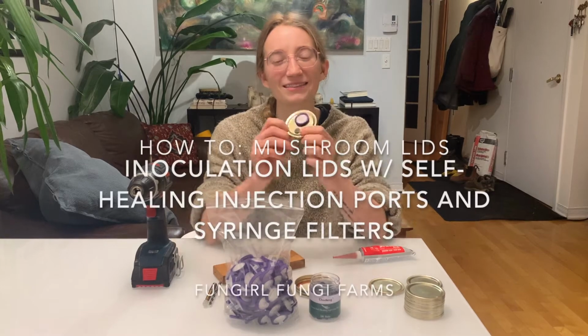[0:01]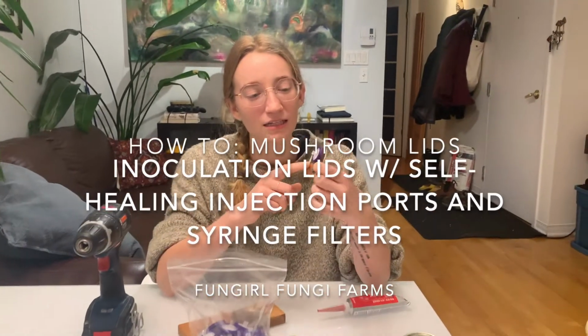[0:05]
Hi everyone, tonight we're making inoculation lids for mushroom wort. We're going to need a syringe filter for free air exchange, the flow of clean oxygen to the mycelium, and a self-healing injection port where you can put your spore syringe or the liquid culture syringe with very little risk of contamination. So we'll show you how to make those.
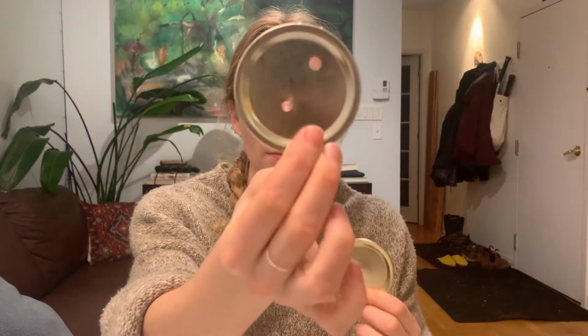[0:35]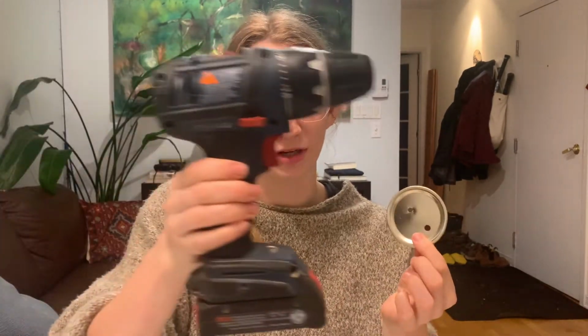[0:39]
So what you'll need are these mason jar, canning jar lids. You'll take the lid and make two holes, one a little bit bigger, one a little bit smaller. You'll need a drill to make both of these holes. The bigger one is made with a 1/4 inch Forstner bit. This makes the hole for the self-healing injector port.
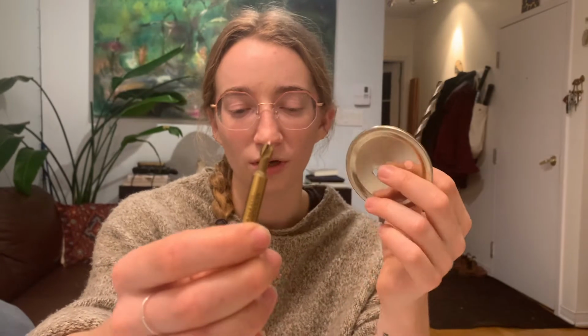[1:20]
These are 13 millimeters and come in a pack of 100 for $13, so that comes out to about 13 cents each. And these fit in there really well, I'll show you later. But you don't need to cement them in with any silicone or anything. The smaller hole is made with a 13/64 metal drill bit. You can also use a brad point bit that has a little pointy thing like that. That's usually for wood, but since it's such thin, flimsy metal, it's okay, and it makes it a little bit easier.
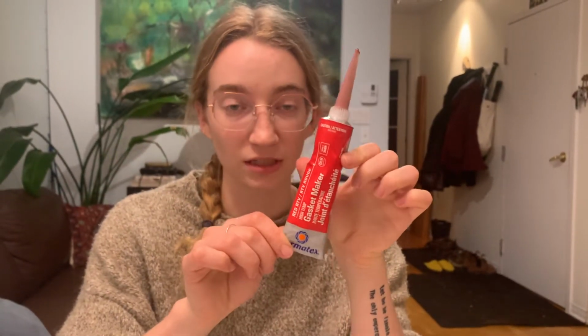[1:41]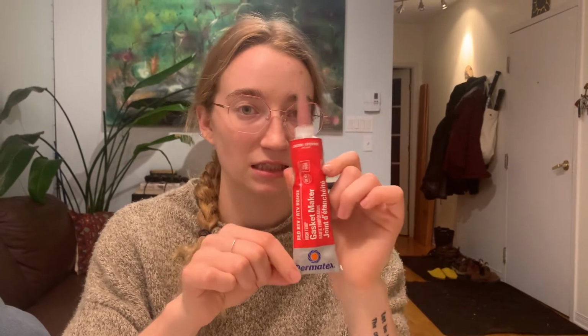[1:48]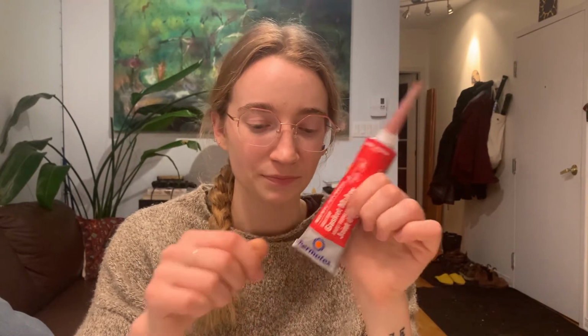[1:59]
So the syringe filter goes in the smaller hole. This is 25 millimeters in diameter with a 0.22 pore size. And you cement this into the smaller hole with high temperature silicone. Make sure it's high temperature because it's going into the pressure cooker at very high temperatures. A lot of people use this RTV gasket maker, but just make sure it's high temperature. This is $8 for the whole thing and can make probably 1,000 lids, so it's about 1 cent each.
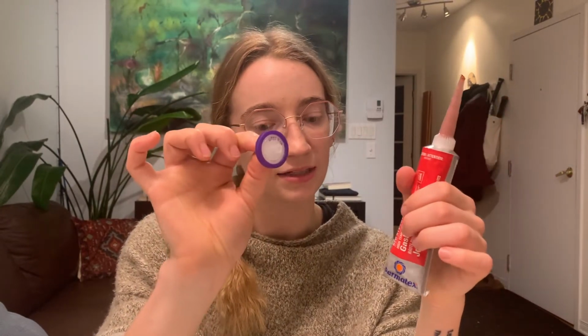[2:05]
These are 100 for $24, so about 24 cents each. So the whole price of everything, including the lids, which come in a pack of 12 for $5, is about 85 cents a lid. You'll also need a piece of wood to drill into to make sure you don't damage your table. And we'll put a link in the description with all of these items so you can buy them if you want to make your own lids.
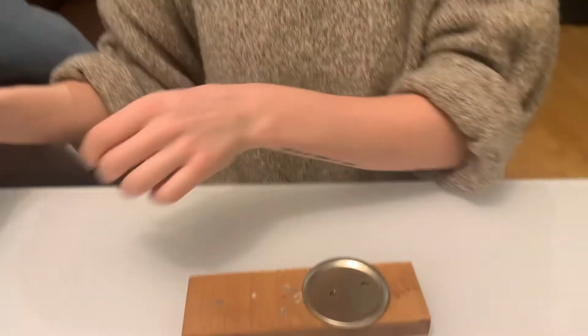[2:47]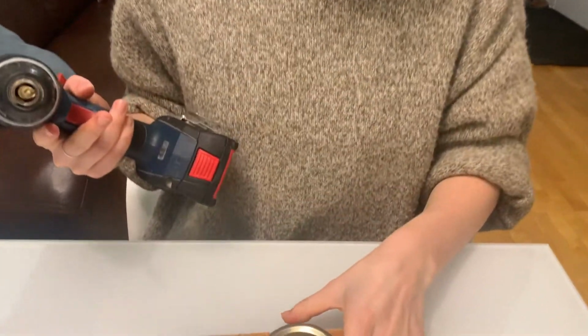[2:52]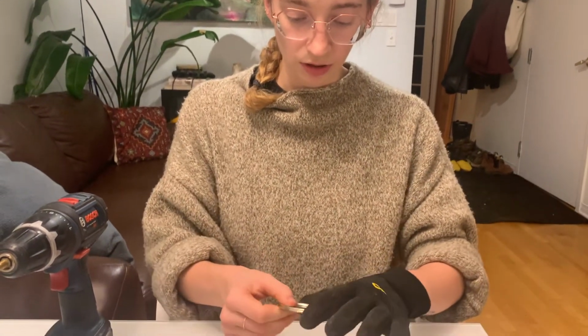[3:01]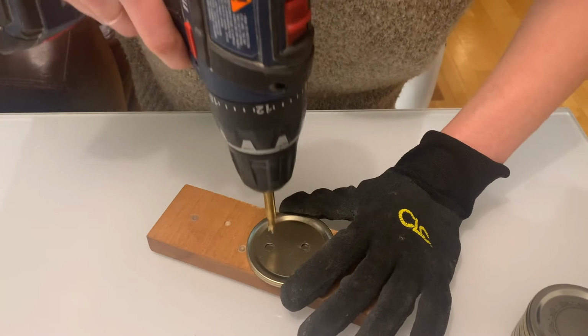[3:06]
So now to make them, just to make sure that they have a nice spacing and don't crowd each other and also are not too close to the sides, we have a prototype that we just used to make all of the new ones. So we put this over and then put them both on the wood. I'll start with the 1/4 inch. You can use fishing gloves that have a bit of a grip just to hold it to make sure it doesn't go anywhere. And you want to make sure they line up nicely. And then it's easier if you stand up and sort of have your strength pushing over, but you want to make sure you're in the middle.
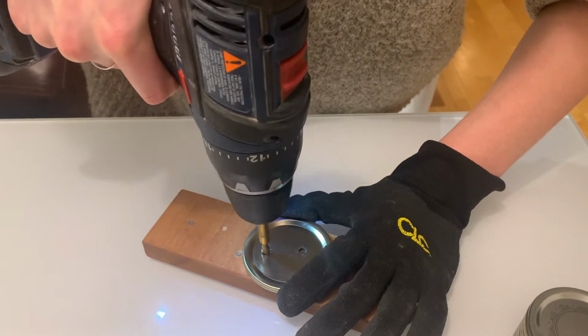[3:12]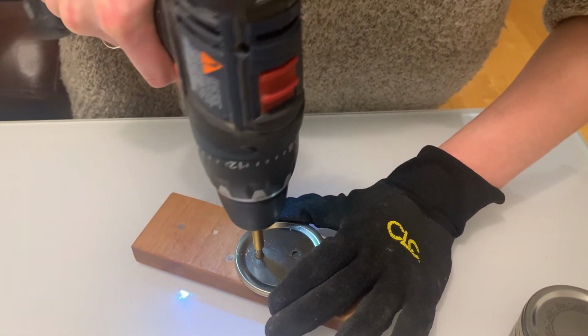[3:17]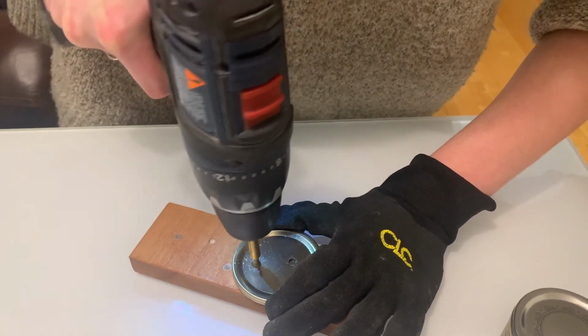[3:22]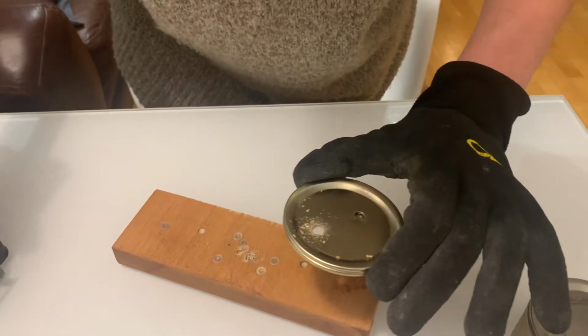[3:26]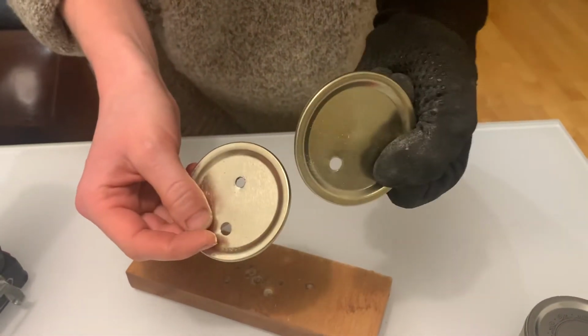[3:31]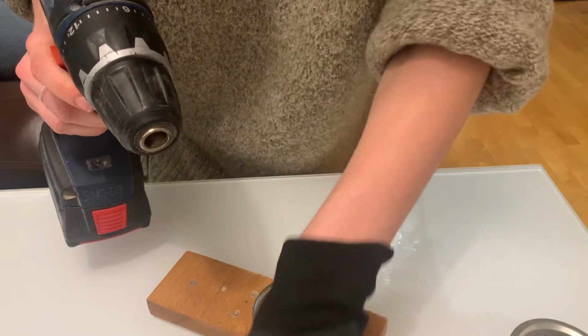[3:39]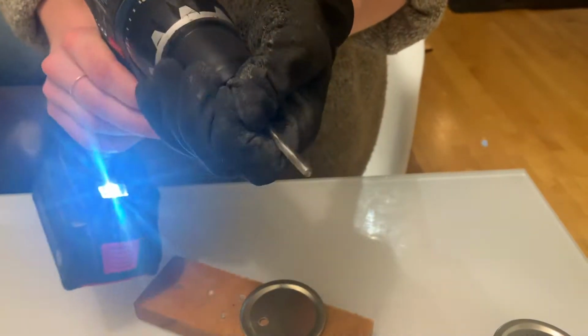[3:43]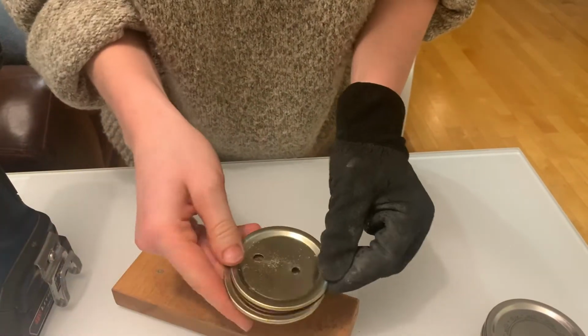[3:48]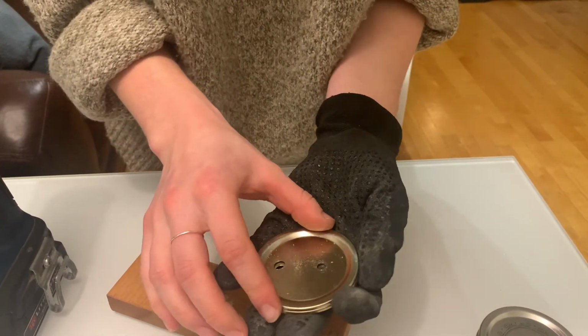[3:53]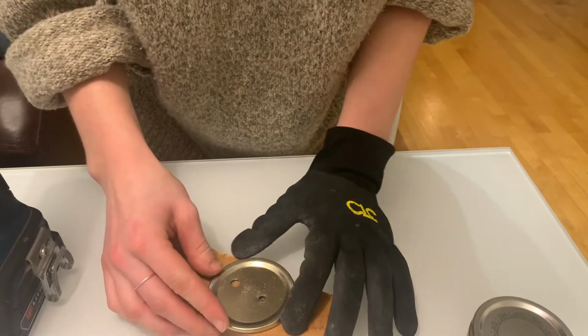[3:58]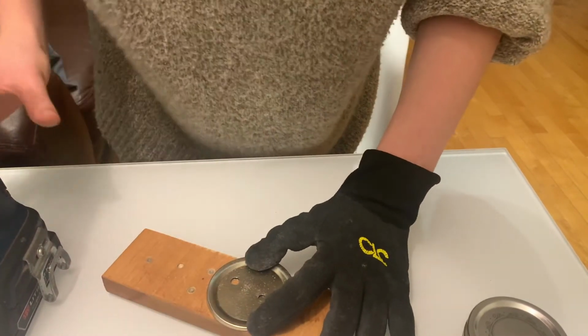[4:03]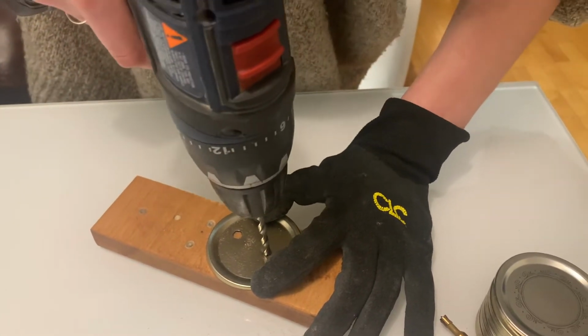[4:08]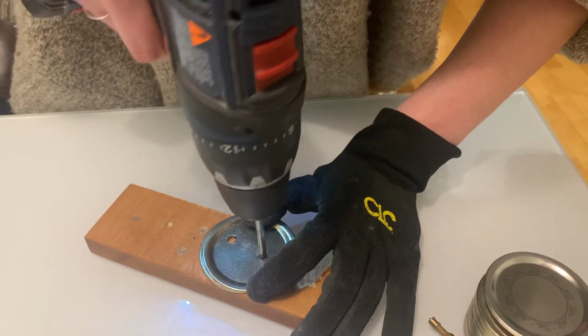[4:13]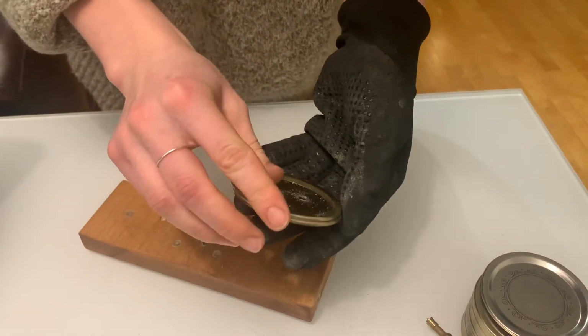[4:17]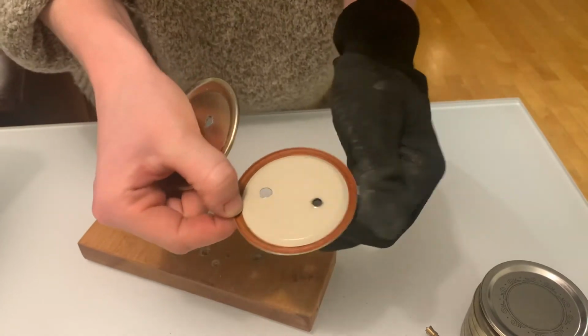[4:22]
A bit too long, but that makes the hole. So you're going to make sure to line them up. Change out the drill bit, put the right one on top. Line it up nicely. Again, standing up so you can put all of your strength down makes it easier. Yep, not too bad, not too long.
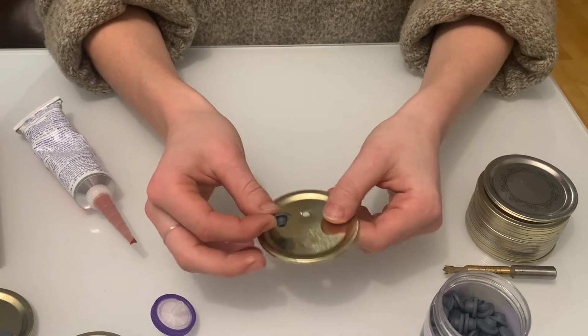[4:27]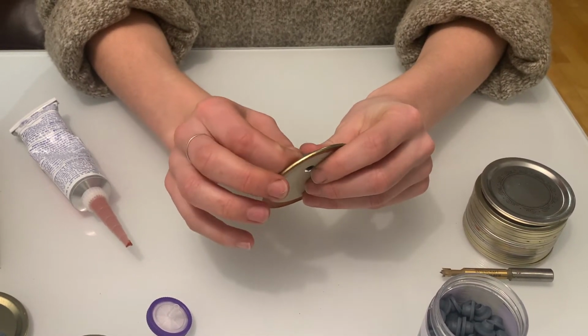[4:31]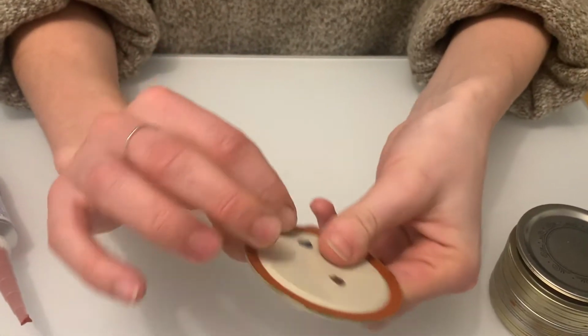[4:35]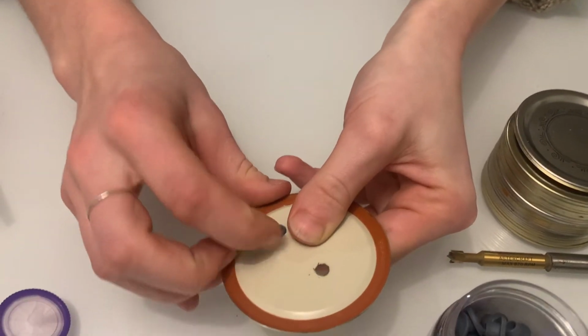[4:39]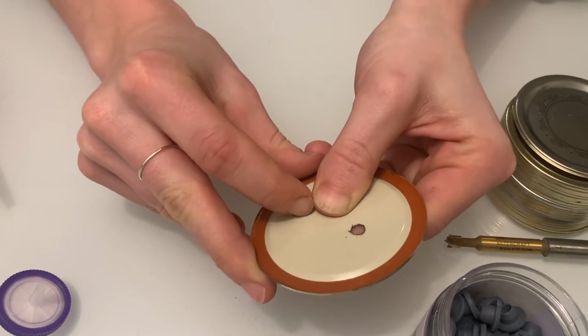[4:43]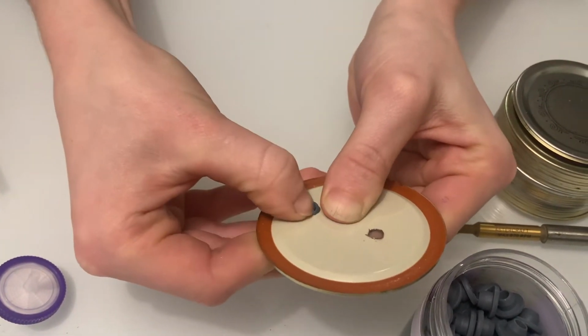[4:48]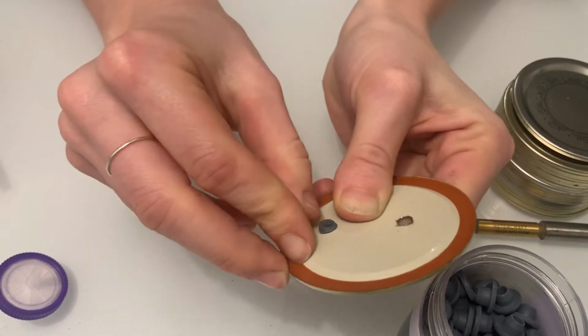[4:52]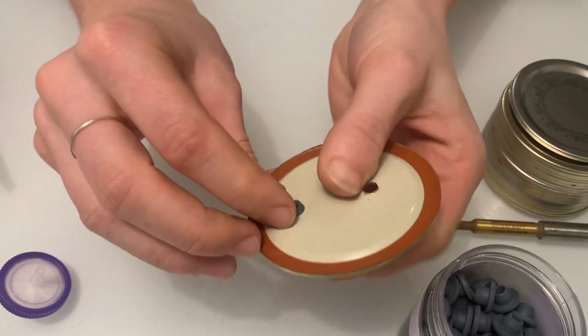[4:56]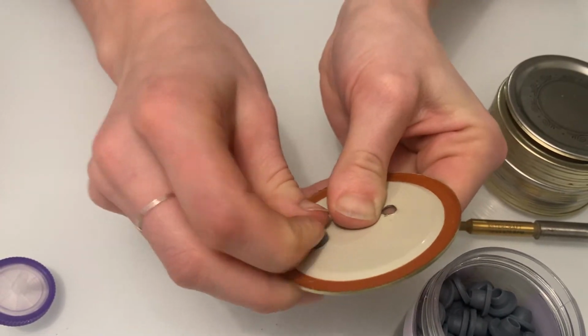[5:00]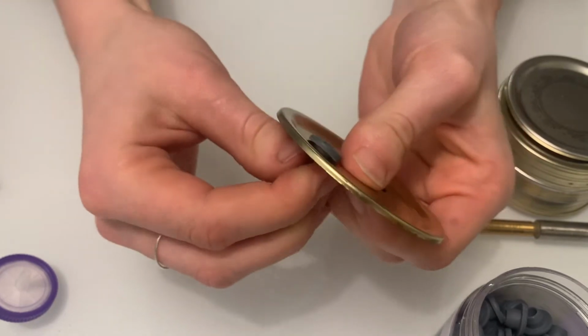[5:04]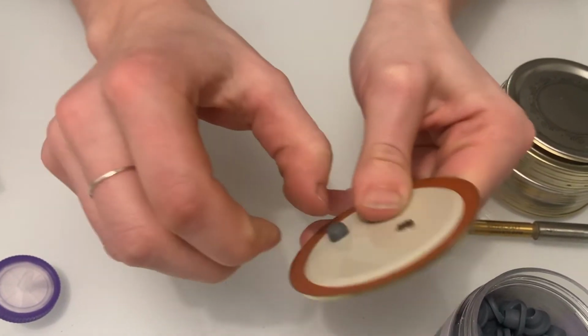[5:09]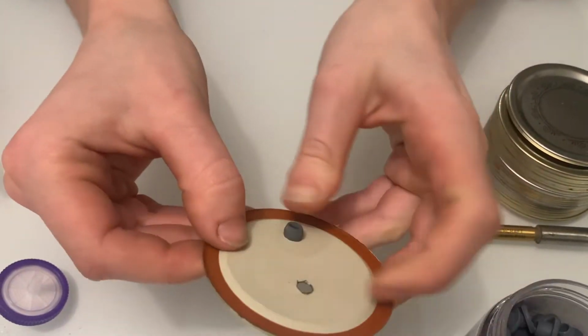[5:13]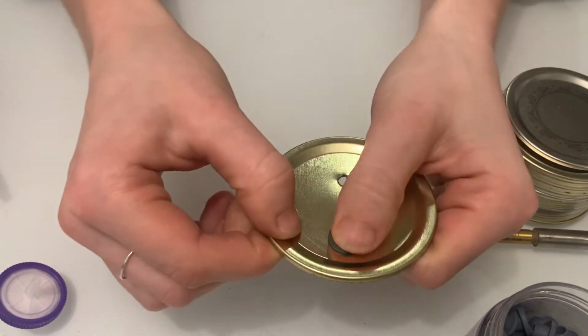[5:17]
So in this hole, the bigger one, goes the self-healing injector port, and it's a really tight fit, so it's a bit tricky to get in, and since these are so flimsy, you don't want to put too much pressure and warp the lid. You just want to slightly put it in and then pull on the sides. And slowly like that, you will get it in. Needs a little bit more. And like that, it's really well sealed in.
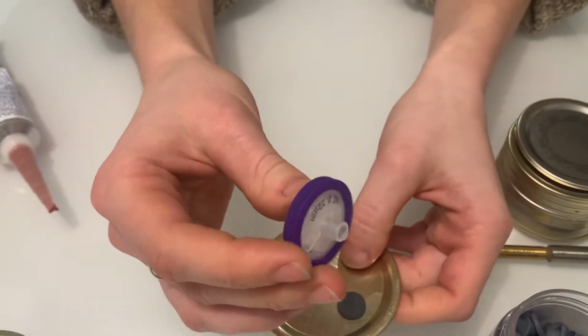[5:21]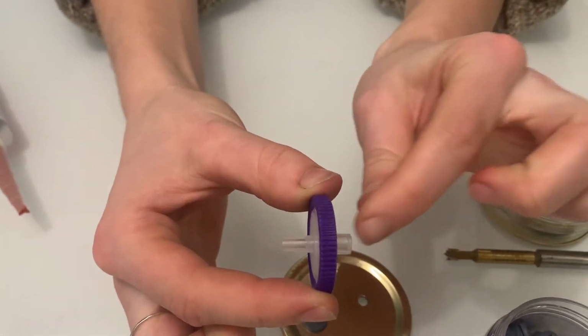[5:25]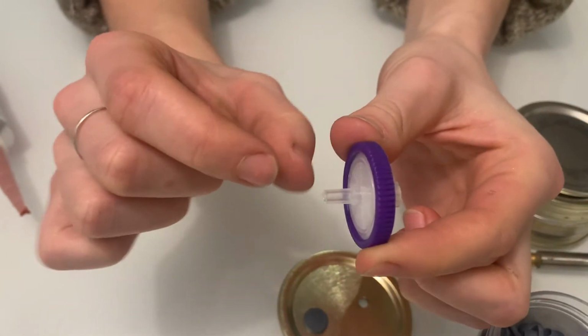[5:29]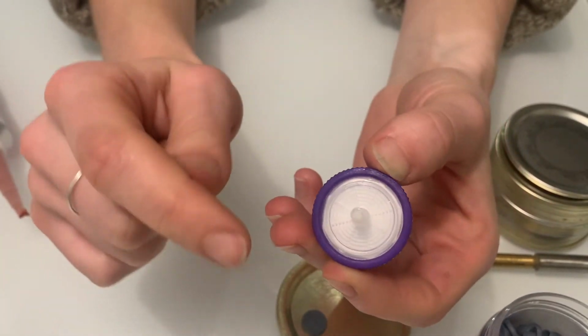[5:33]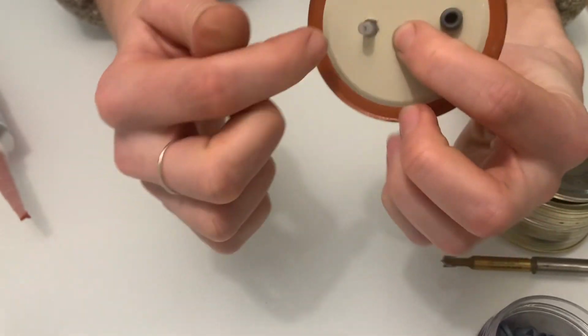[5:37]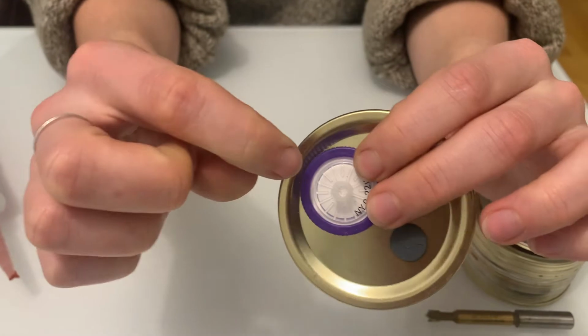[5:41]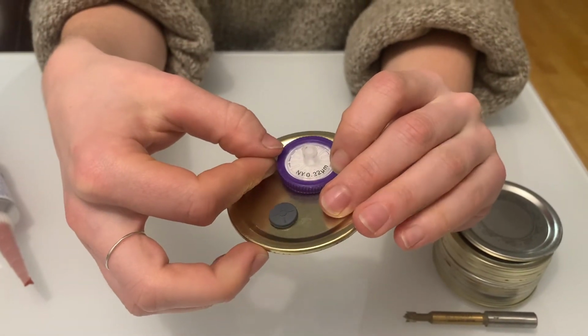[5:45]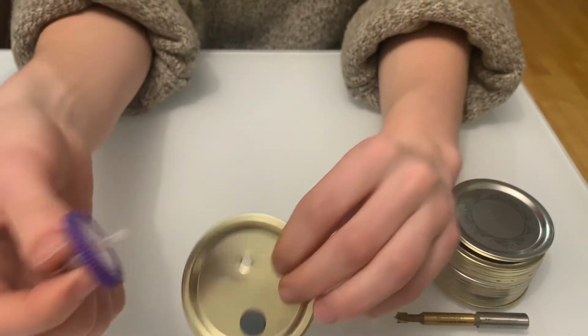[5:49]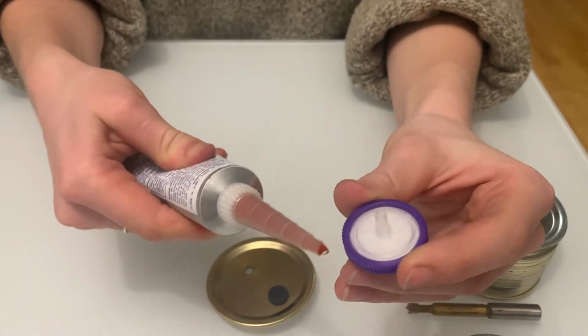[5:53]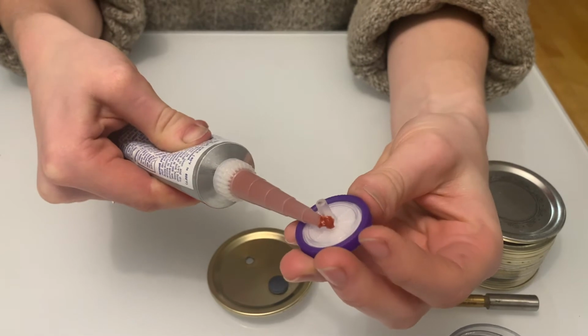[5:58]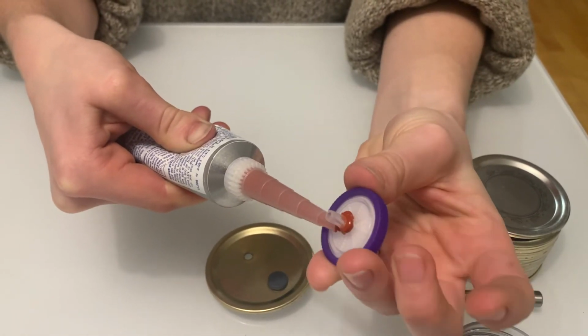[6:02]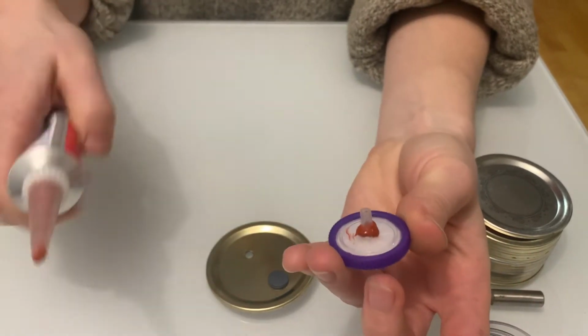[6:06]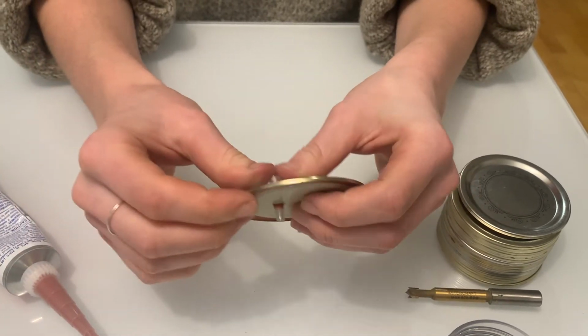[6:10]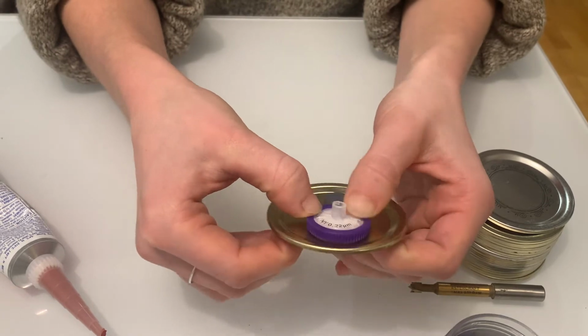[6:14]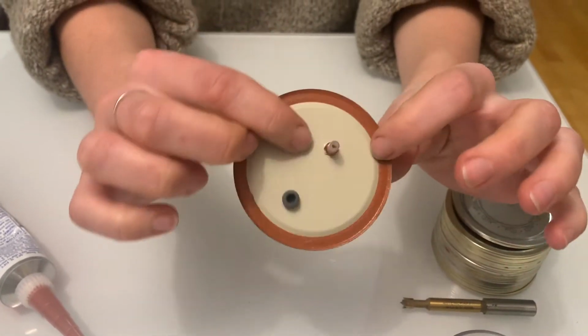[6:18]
And for the syringe filters, you can see there's two different size sides. There's one that's wider and shorter, and one that's thinner and longer. The thinner, longer side will be the side going into the hole on the inside of the lid, and the shorter one with the 0.22 will be on the outside. So you put that in, but first you use the high temperature silicone to make a ring around it. It will be all covered up, so it doesn't have to be pretty. And then you put that into the hole. You make sure it goes down. And then you wait for this to dry. Should be good the next day.
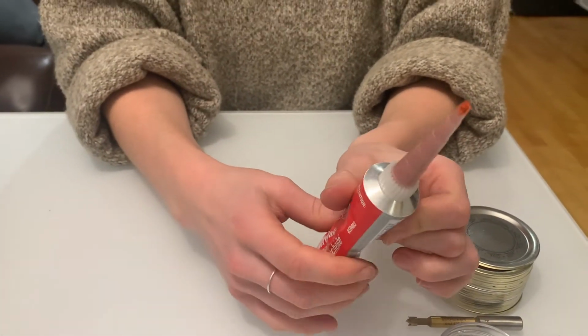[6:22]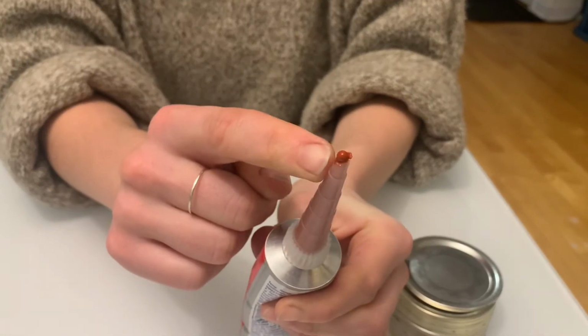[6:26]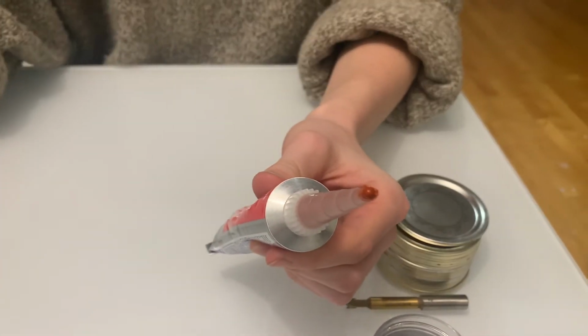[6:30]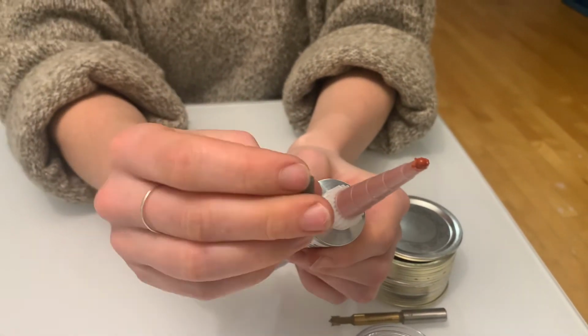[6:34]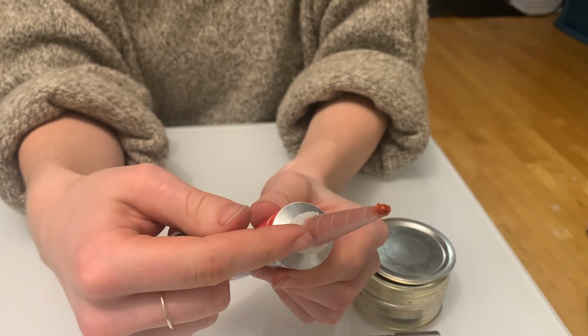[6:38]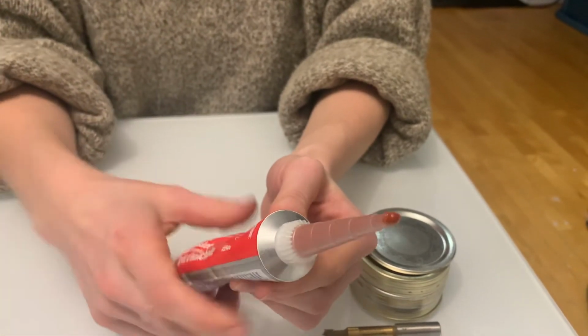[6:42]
So a note on the silicone, once you're done using it, you can just make a bead, and that will dry, and the next time you use it, you can just flick it off instead of taking this whole thing off and putting the lid on, because that way you're just losing all of this. It's an easier way to deal with it.
So these are our inoculation lids with the self-healing injector port and the syringe filters. Those two things really minimize contamination, which is why these are so great. And these are also great because you can use them throughout the mushroom growing process, from your spore syringes directly to agar, to liquid culture, to your grain spawn.